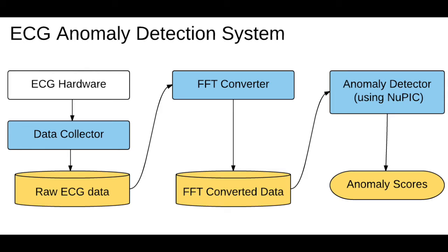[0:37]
In this project, I try to detect anomalous parts of the ECG, electrocardiogram data. This project is still in prototype. Honestly speaking, I could not get enough accuracy of anomaly detection now, but I think this project shows the possibility to use HTM framework for biosensor or medical application. Okay, let's look into the project.
This is my project structure. There are about 3 parts. First, collecting data using an ECG device with a simple script. This script collects data using serial communication. The data is saved to a CSV file. Second part is the FFT, fast Fourier transform part. This part extracts the characteristics of the ECG data. Third is the most important part, detecting anomaly using NuPIC.
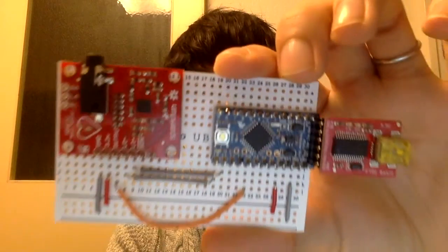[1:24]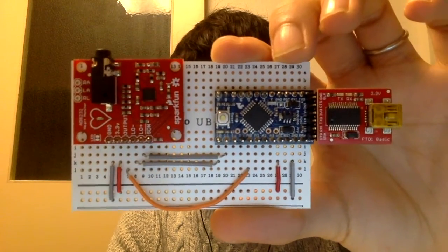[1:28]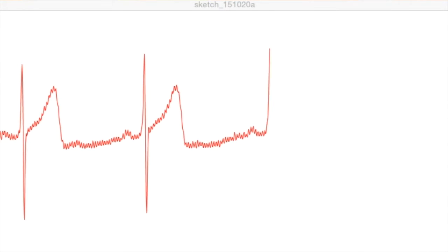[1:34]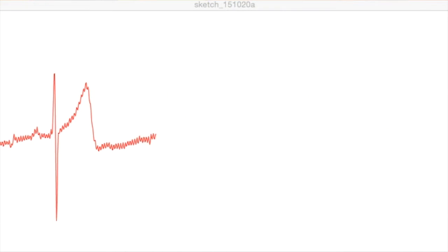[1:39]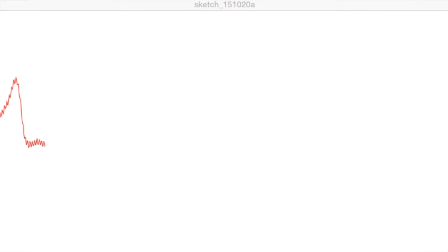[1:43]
In this project, I use my own made ECG device. This is the device. This device can read about 190 samples per second. It is a small enough interval for analyzing data. This device's cost is under $50. It is very cheap. Collected data is the time series of scalar values.
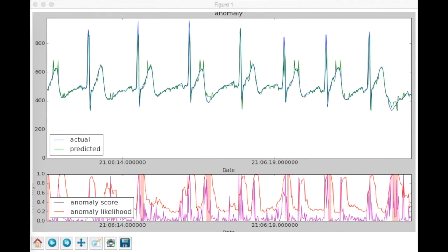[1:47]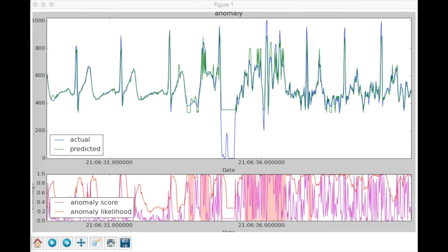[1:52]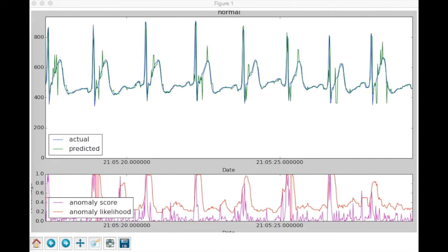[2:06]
I also collect the anomalous ECG data like this graph. When I started this project, I thought it looked easy to run ECG data using NuPIC, because the time series of scalar values are the same as in some tutorials. Okay, this video shows the normal ECG data running with NuPIC. Most anomaly values are 0.2 to 0.4, but the anomaly score goes high regularly.
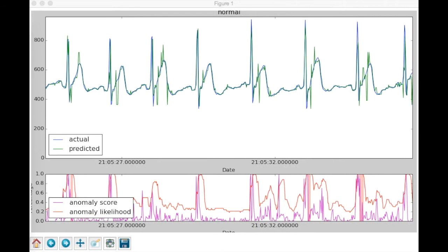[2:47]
The high anomaly score corresponds to the QRS parts of the ECG data. In ECG data, the biggest peak and spike parts are called the QRS wave. NuPIC tends to detect the normal QRS wave as anomalous parts after enough running. Matthew also experimented with ECG anomaly detection with NuPIC and uploaded it to YouTube. That video also shows NuPIC tends to mark the normal QRS wave as an anomalous part. Therefore, I need another strategy to deal with the QRS wave.
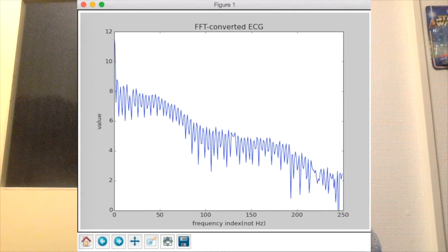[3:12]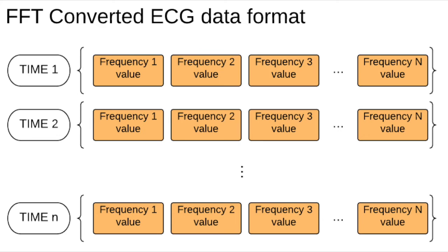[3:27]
On the NuPIC mailing list, many people helped me to analyze ECG data. Some people advised me to use Fourier transform. Fourier transform can be used to extract characteristics of the data sequence. I wrote an FFT converter for ECG data. FFT output is a vector of frequency values. So I got the time series of vectors like this graph. Data 1 has frequency values, data 2 also has frequency values, and so on.
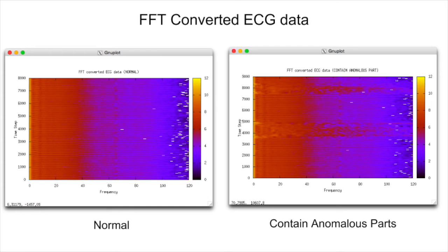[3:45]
This is a visualization of FFT converted ECG data. The left graph is the normal ECG data. The right contains an anomalous part. The vertical axis is the time step and the horizontal axis is the frequency step. Colors show the value of each frequency. You can see a non-uniform part in the right graph. Actually, the non-uniform part shows an anomaly in the ECG data. Okay, the FFT converted data looks great. Let's input it into NuPIC.
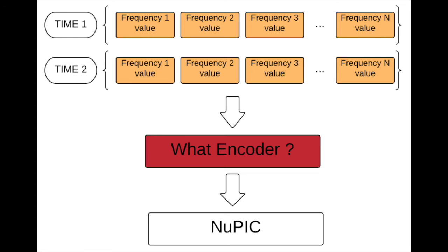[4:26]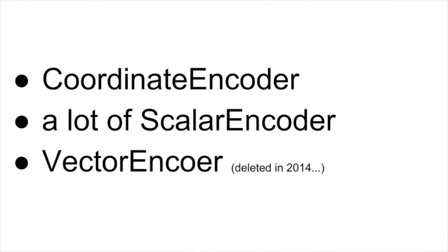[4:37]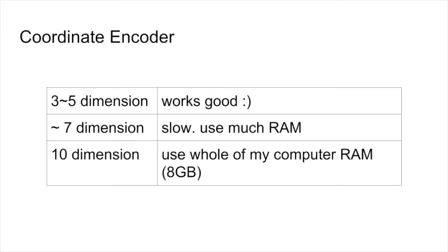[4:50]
I don't know what is the best way to input a vector into NuPIC. I tried 3 ideas. First idea is coordinate encoder. Second is to use a lot of scalar encoders. Third is vector encoder. First, I tested the coordinate encoder. It works well for 3 to 5 dimensions, but bigger than 7 dimensions, it can run but does not work. It uses a huge amount of memory. 10 dimensions use 8 GB of memory, and my vector has 50 or more dimensions.
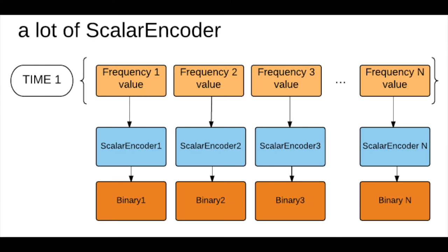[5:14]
Next, I used a lot of scalar encoders. I added scalar encoders dynamically to the sensor params. It can run, but the output anomaly scores are strange. The anomaly score goes too high regularly. I don't know what caused the problem.
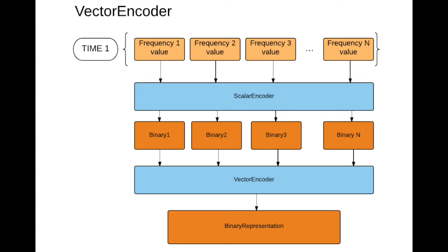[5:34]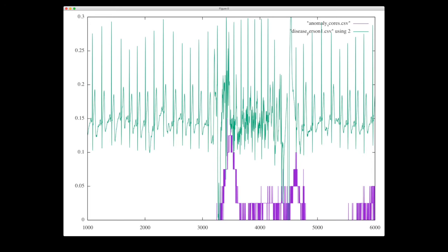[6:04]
I had another experiment that used the vector encoder. It's deleted in recent NuPIC, but I wanted to try this one. So I put this encoder back from a past commit. The vector encoder uses only one scalar encoder instance, gets the binary representation of each vector value and combines their binary representations. The vector encoder works well. Its outputs seem to be different from a lot of scalar encoders for my condition. This is the vector encoder output. You can see anomalous parts have a high anomaly score, but it's not high enough. It's only 0.1 to 0.15. Now, I continue to find the best way to encode time series FFT vectors into NuPIC.
If you are interested in my project, I'm happy. My GitHub repository includes normal and anomalous ECG data, so you can try to use my project data and code for your experiment. I think my project code is also useful for people who want to try NuPIC with time series of vectors. Please check out the README.